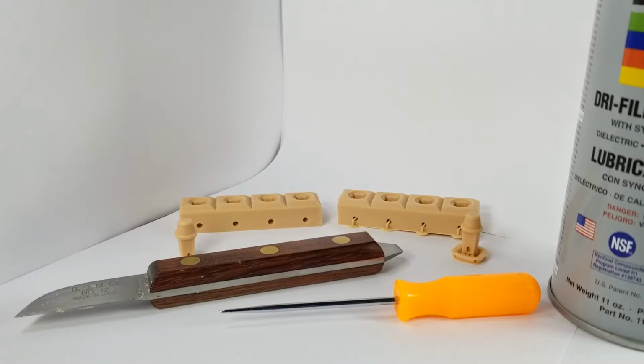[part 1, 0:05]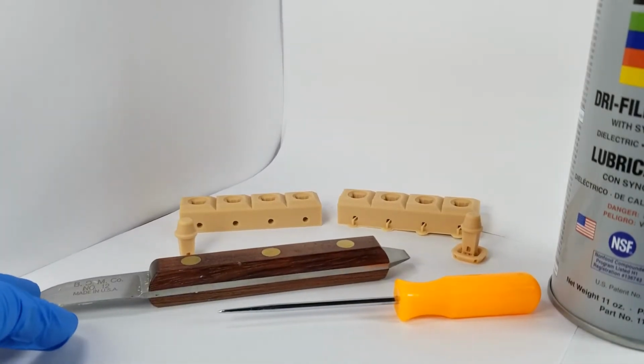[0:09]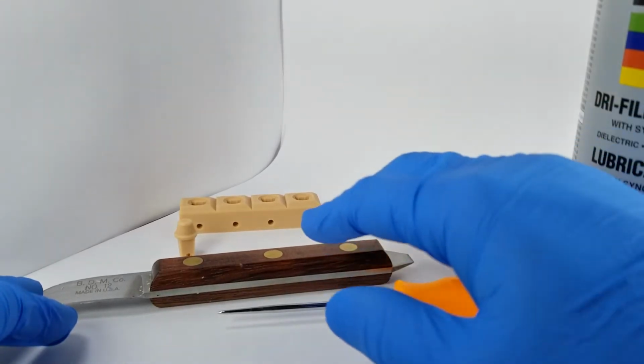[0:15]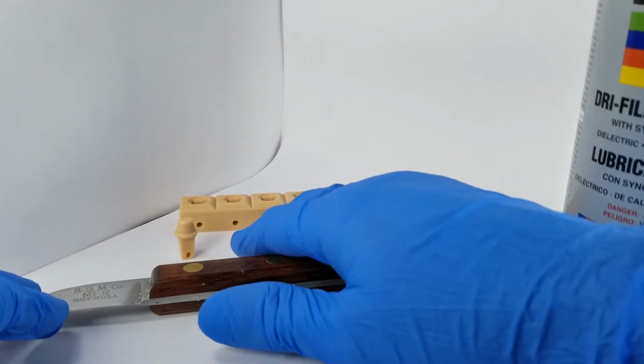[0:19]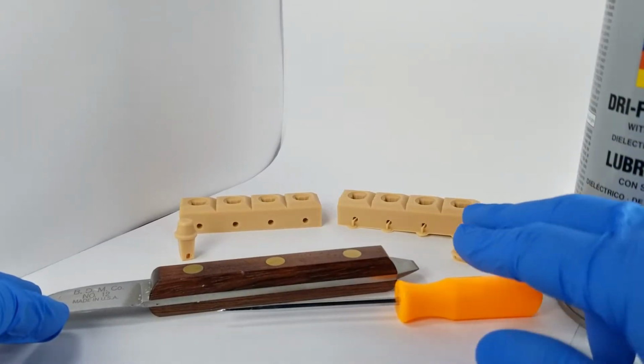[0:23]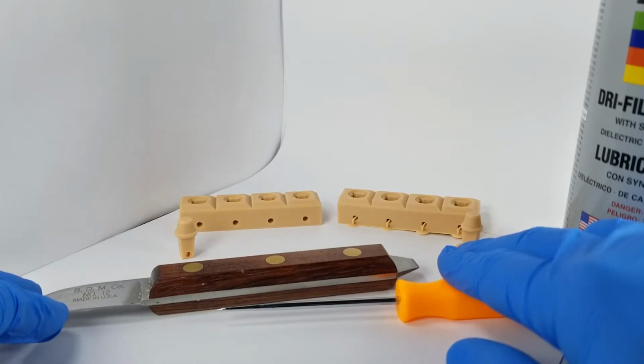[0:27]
Okay, in this video I'm going to show you how to post-process and fit the 3Shape removable die test model. As you can see here, this is a finished test block and die, and then here's one that should be similar to what would come out of the printer, washed and cured and ready to prepare for this test.
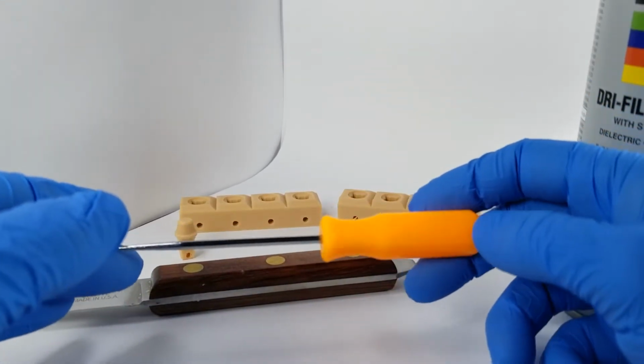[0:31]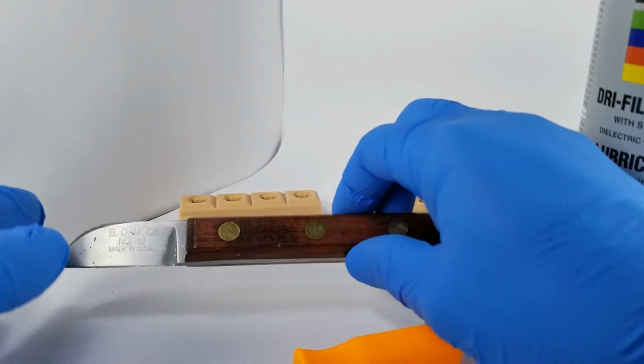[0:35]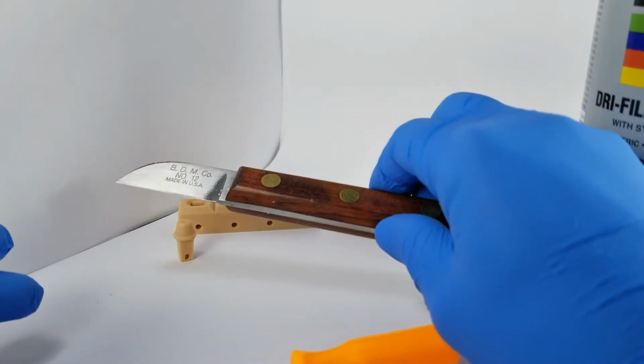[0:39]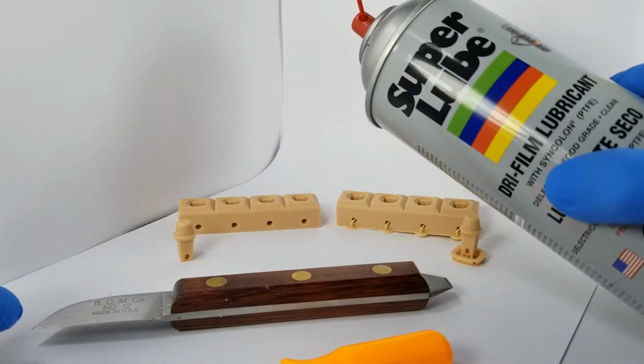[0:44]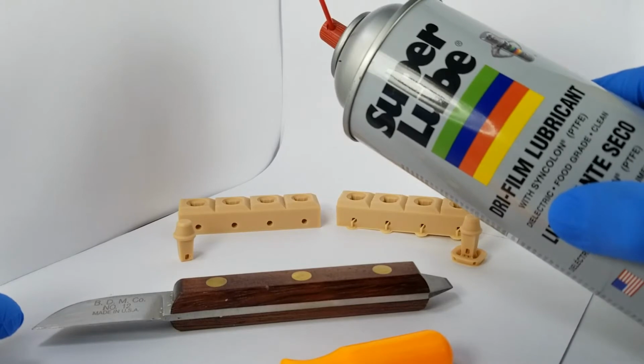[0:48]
In this test I'm going to be using my awl, which is listed on the application guide itself, and my flat edge blade, which I'll be trimming the die with. And then lastly, I'll be using the Super Lube dry lubricant to spray the shaft of the die.
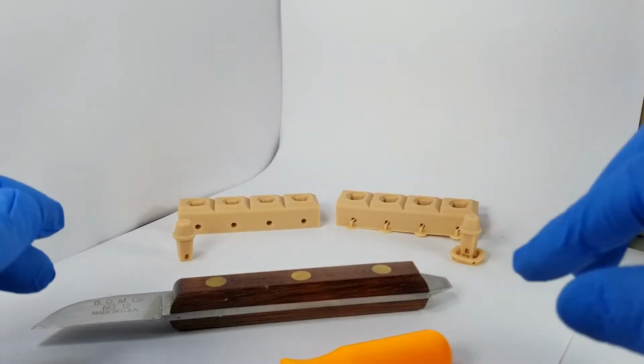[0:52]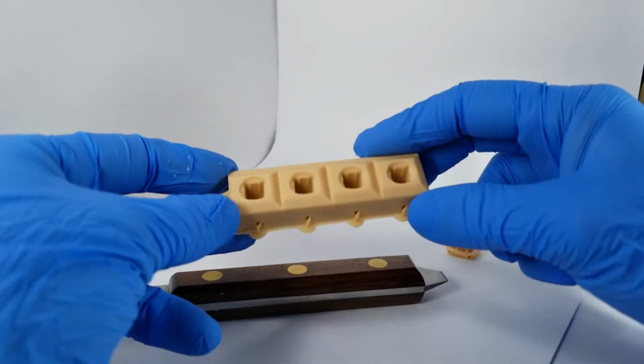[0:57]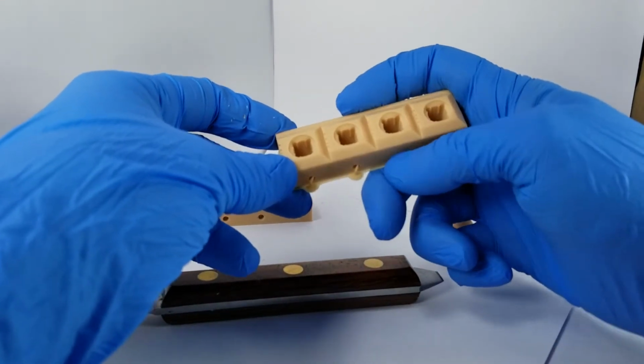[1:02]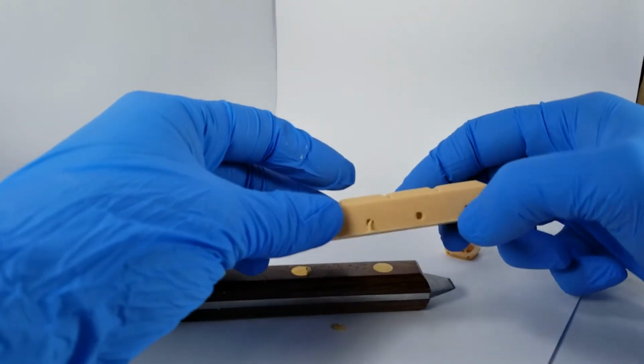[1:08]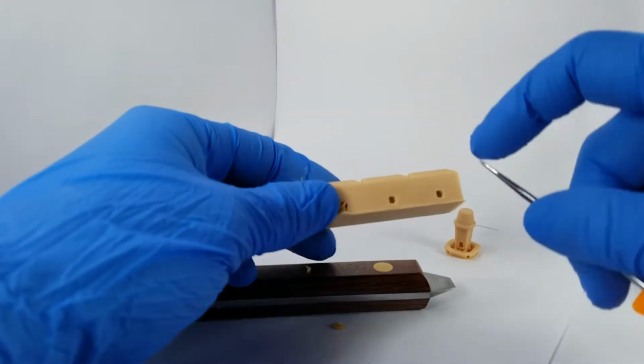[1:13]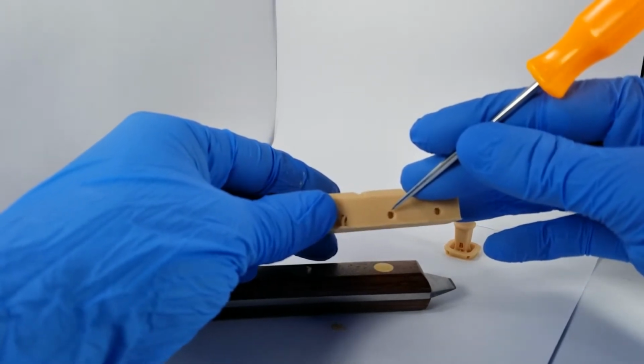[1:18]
So with all that said, first things first, once it's cured, you can easily remove the supports on the front by just using your finger and clicking these off. Now, removing the supports inside the socket is really optional if you want to make sure you have a good view of the insertion of the die to the hole and how those holes align. What I like to do, and usually I do this under my microscope, is push on the edge of the support in the hole and it removes the entire part.
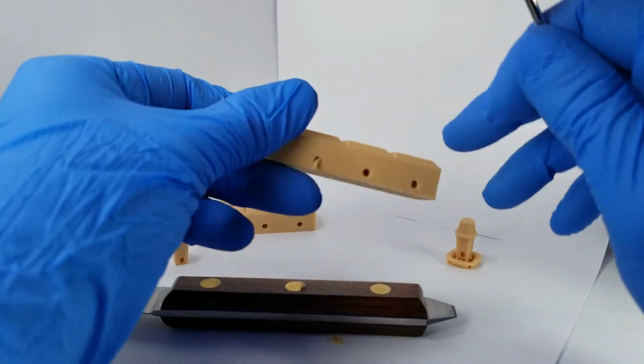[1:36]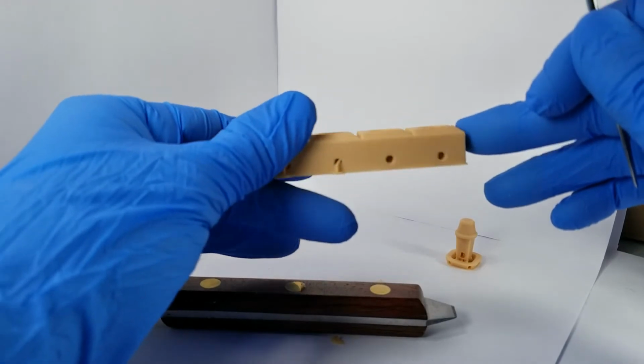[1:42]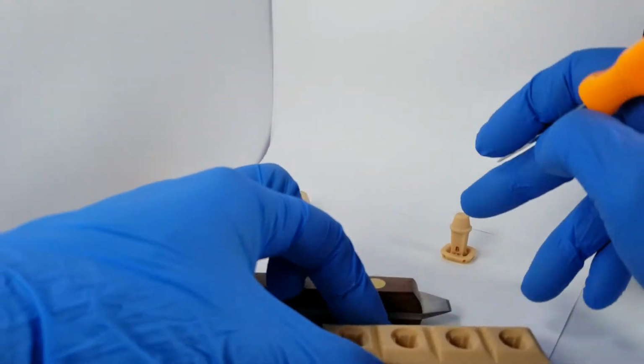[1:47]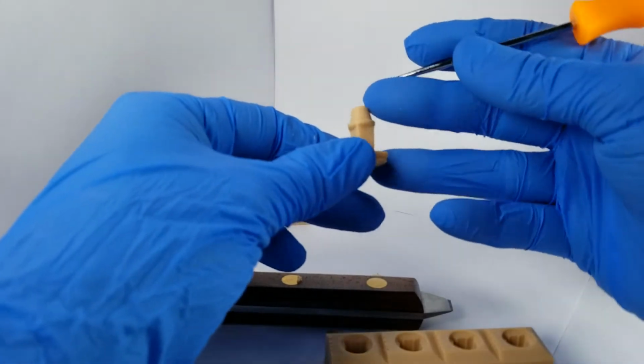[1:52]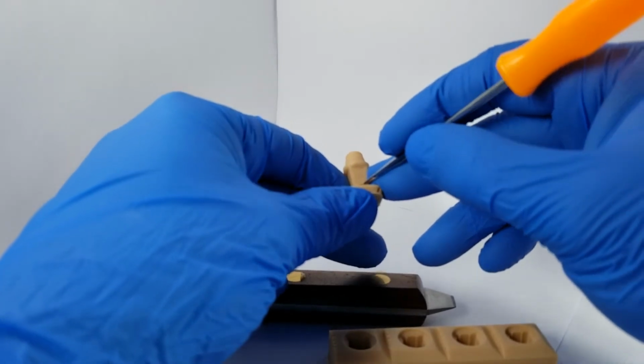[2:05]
So you can remove as much or as little of that as you want to, and just make sure you blow out the hole in the socket with compressed air before fitment, so you don't have that interfering in your fitment. And then for the die itself, similar to the hole on the model, you can use your little awl here and poke out these support structures if you want to see a clear view of that seating hole. So I'll just go in there and push on the edges of those parts. When it's UV cured like this, they usually just snap and blow out, and that looks pretty good.
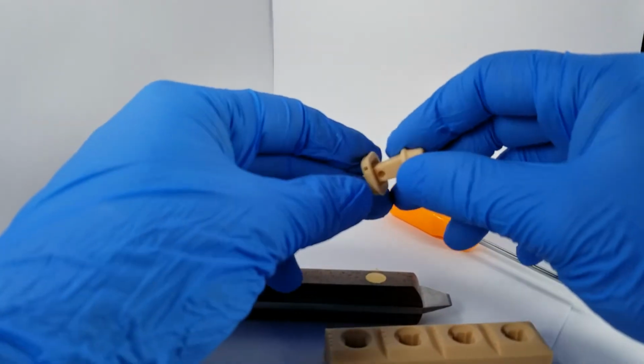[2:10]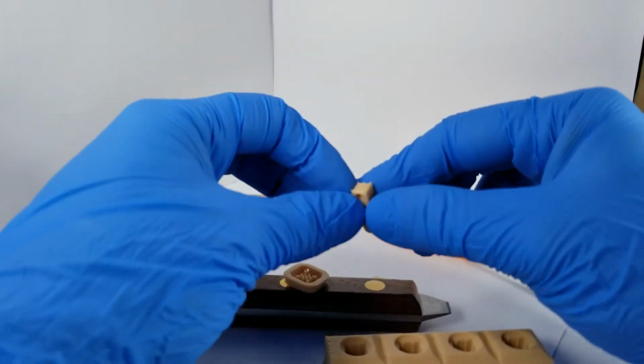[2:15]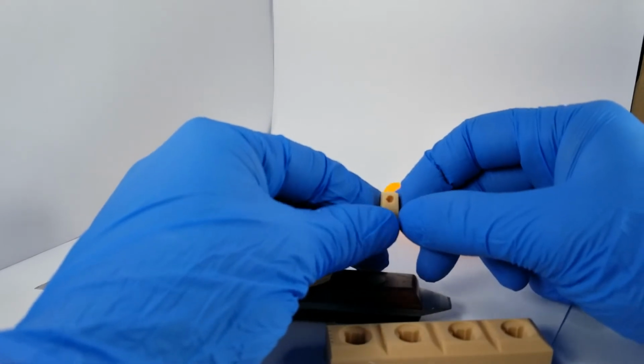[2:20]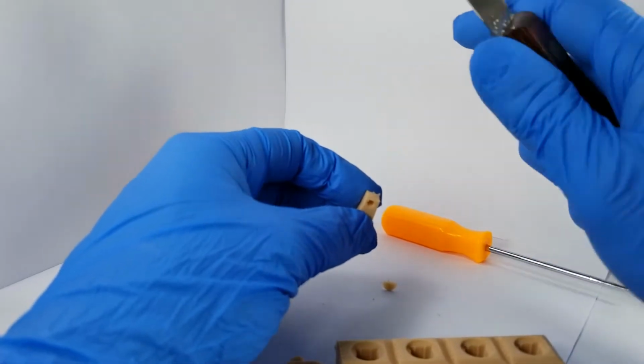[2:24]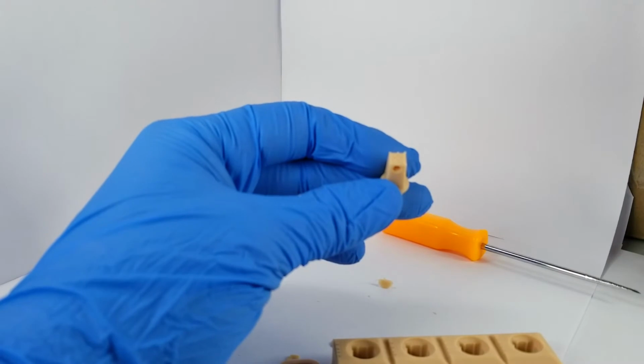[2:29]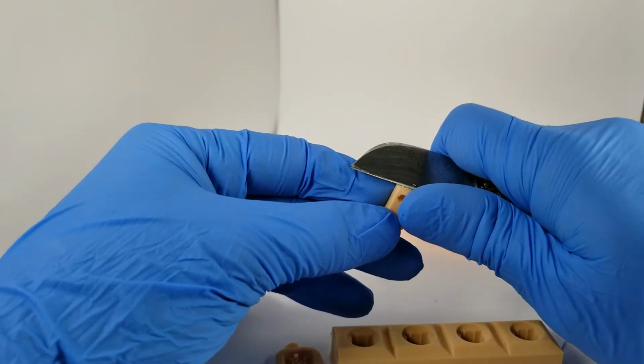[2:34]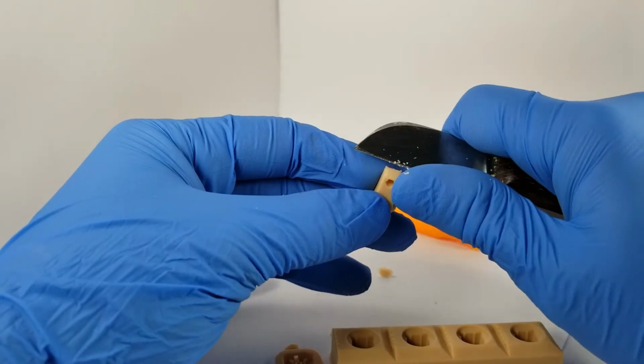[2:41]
The bottom supports are really easy. You just twist and peel it off. And probably one of the most tricky parts, and really what I wanted to show specifically, was trimming this die. Again, I usually use a microscope to trim parts like this, but let me see if I can focus it on my fingers here. Really what you want to do is flushly trim the bottom of this test die, so you get rid of all the little support knobs and have it as flat of a surface as possible.
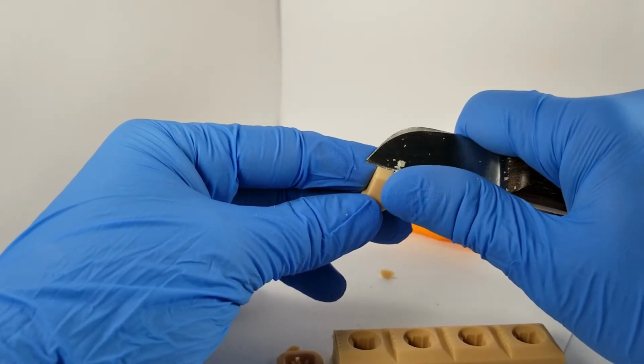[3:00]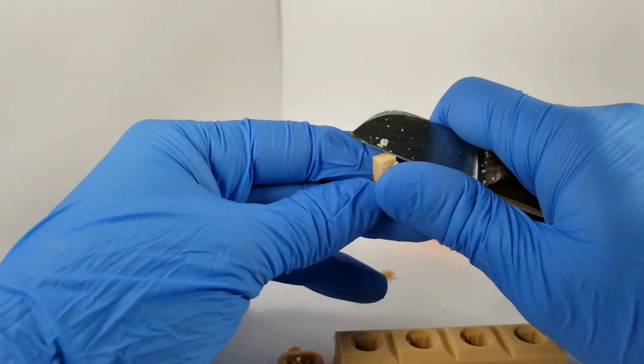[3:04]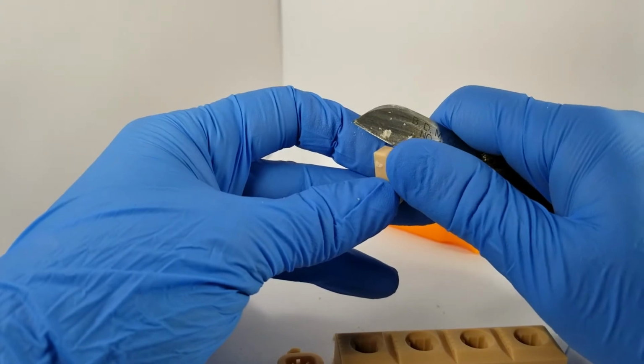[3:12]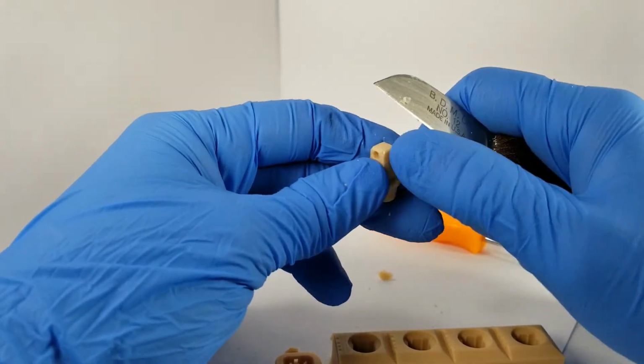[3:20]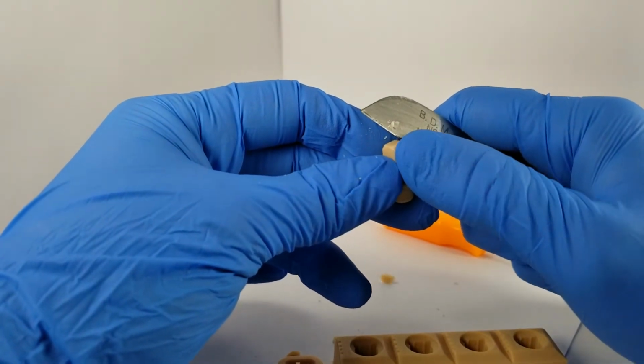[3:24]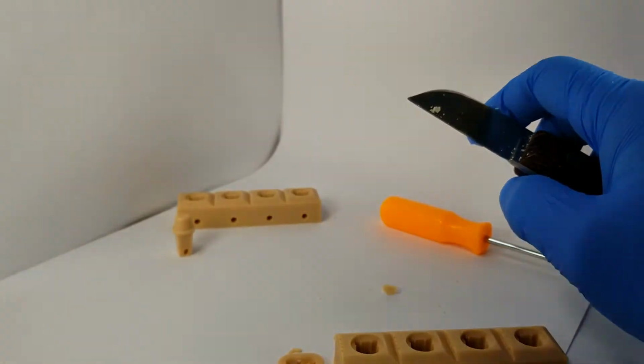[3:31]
Now there's actually quite a bit you can scrape off and remove to make this part flat, and you'll notice during the first step of fitment, you can quickly determine whether it's relieved enough or not. So I'll just do a little bit here and show what that looks like, and make sure you get the corners notched off as well. Something that's important on the edges and the corners is that they don't really have much to do with seating. So over relieving those edges and corners, even removing a little bit extra, will not really change anything. I actually just snap some of the corners off. I don't want those to be the reason why my die isn't seating. So something like that. Again, a little compressed air would be ideal here.
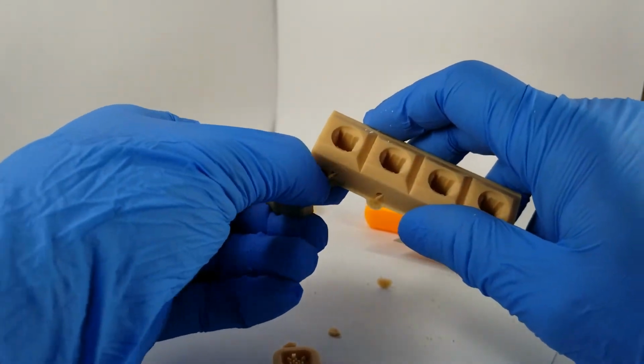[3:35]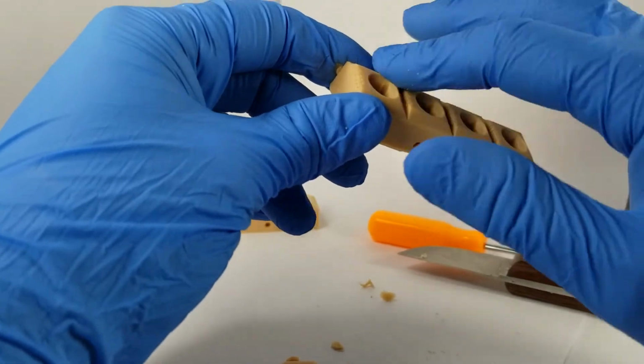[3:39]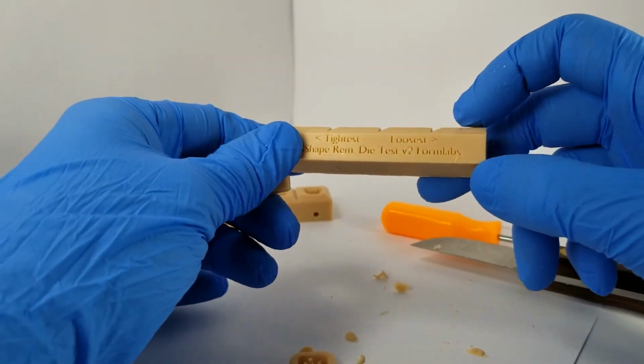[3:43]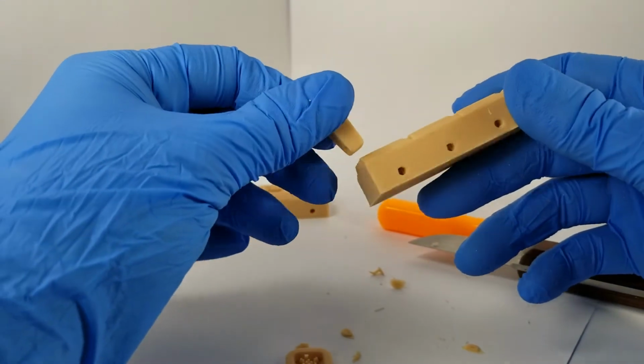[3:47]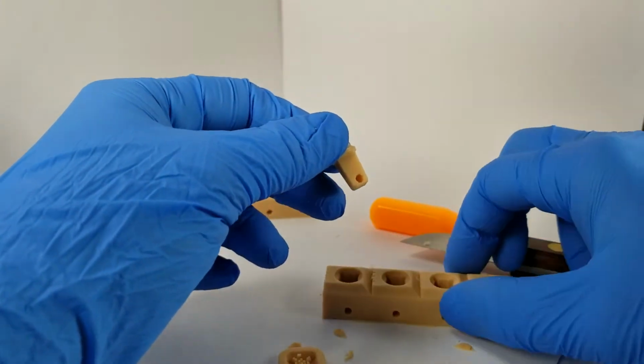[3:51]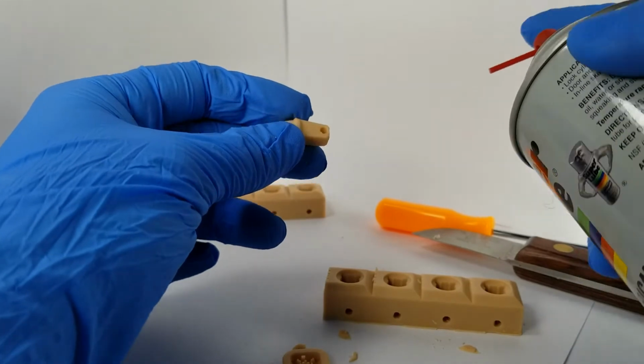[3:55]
We want to work from the loosest side to the tightest in that order. Once you have your model prepped, you insert the die. Actually, I'm skipping a step here. You want to spray this die with our Super Lube. This really makes the part come in and out easily and gives you a better operating range.
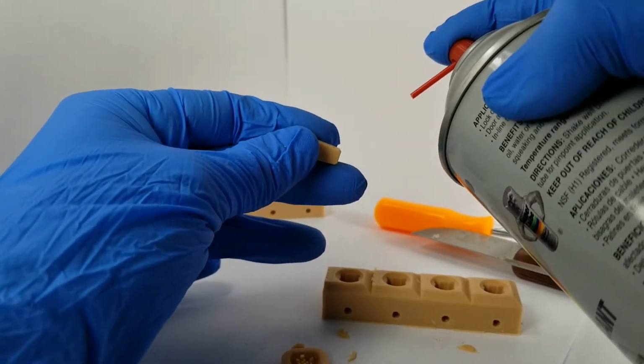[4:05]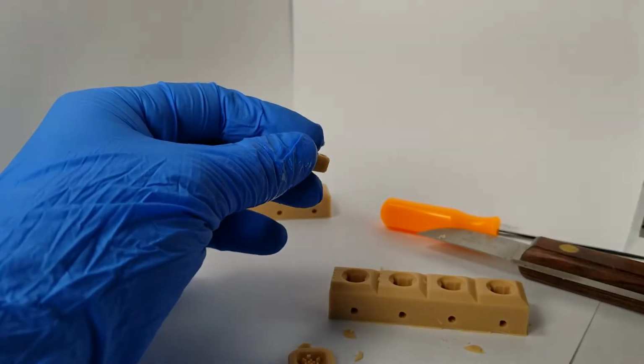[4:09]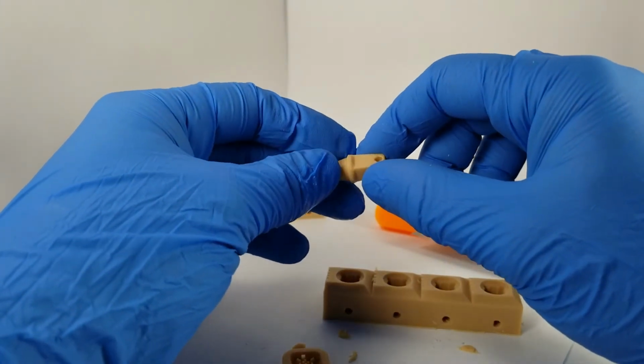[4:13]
And this is how you want to test, because this is what you should be doing for your removable die models anyway. Give it a quick blast around the margin. If you're at all concerned about it getting on the prep surface of the die, you can mask it with tape or something like that as well. But this spray-on dry lube is food grade, it goes on clear, and there's really nothing left behind, so I wouldn't be too worried about it. Let that dry for a minute.
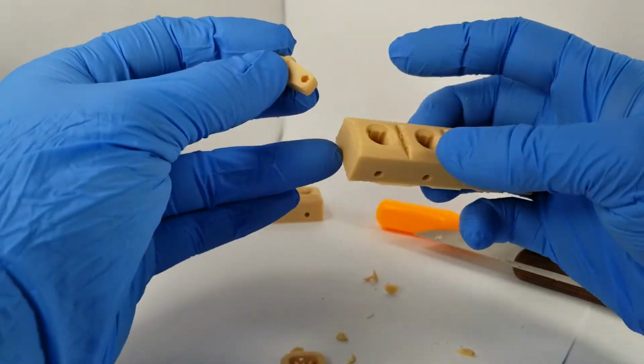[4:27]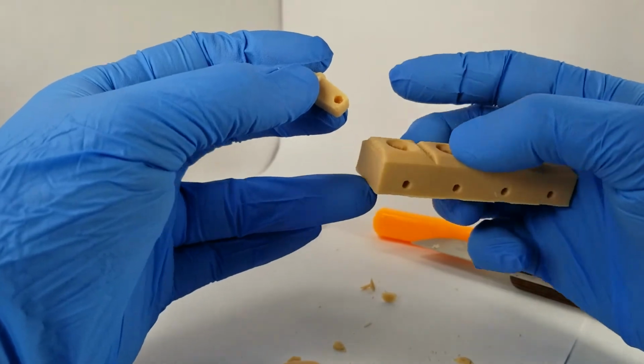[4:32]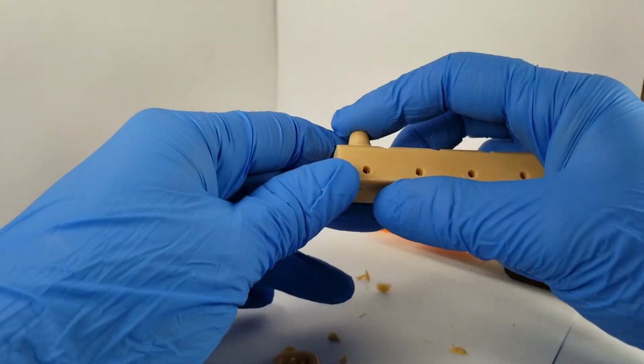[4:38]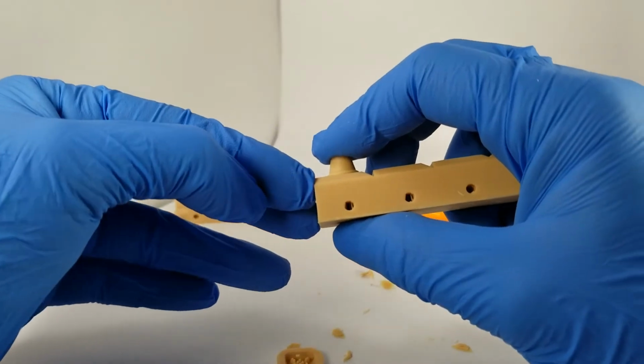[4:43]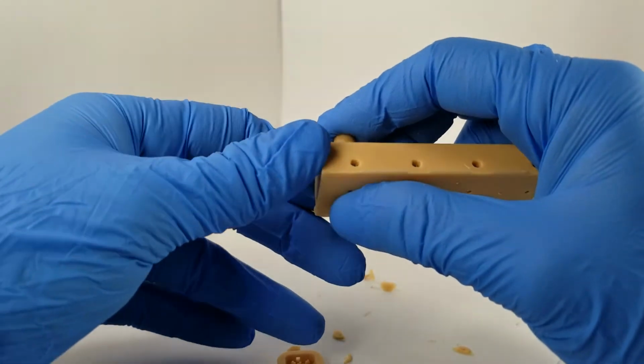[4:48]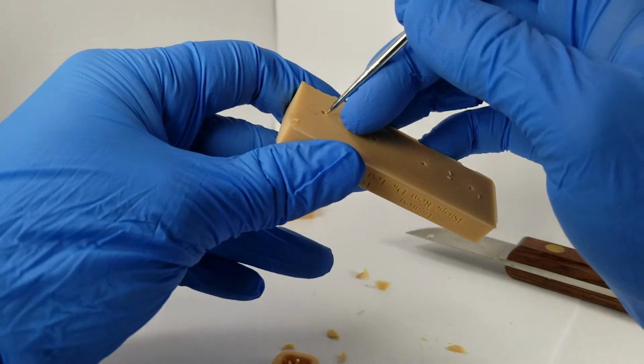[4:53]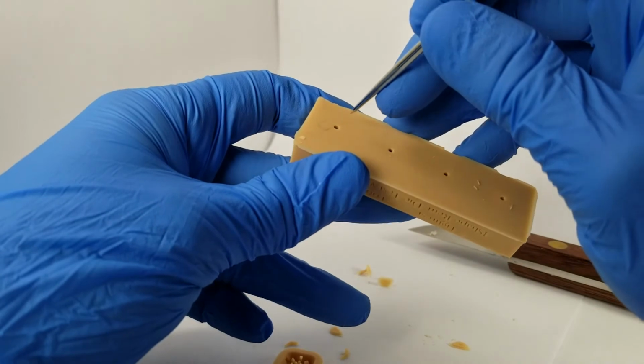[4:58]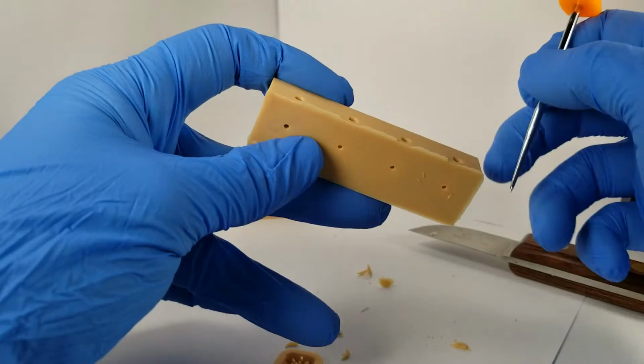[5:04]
Now we are ready to do some seating, and again I'm starting on the loosest side first, the 0.035, and we are seating it. You want to make sure the seating hole is all the way down, and it's hard to see on a camera that doesn't have a microscope. If it's not, you view the seating from the bottom hole, and don't be afraid to relieve this bottom hole a little bit more. I use my awl, which is nice because it's a bit larger than the hole, so the deeper you go in, it expands out that hole very nicely.
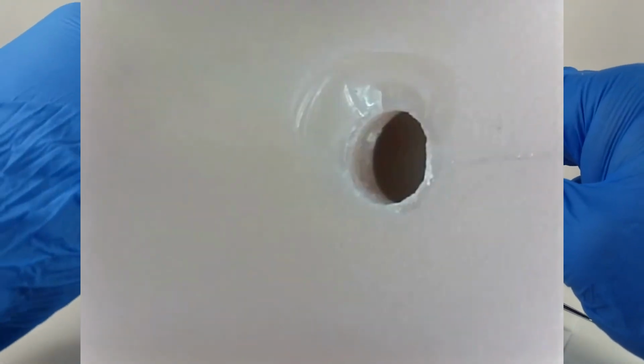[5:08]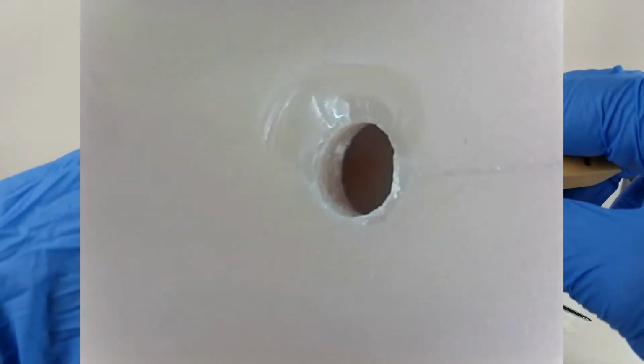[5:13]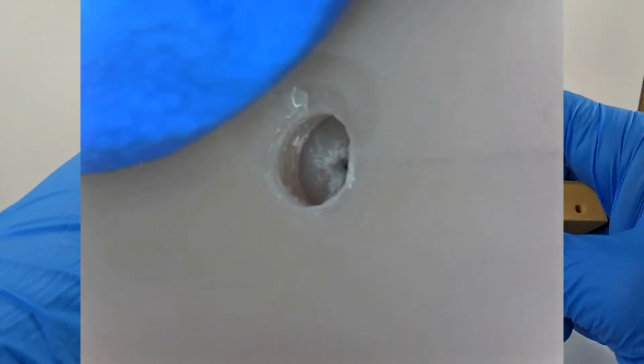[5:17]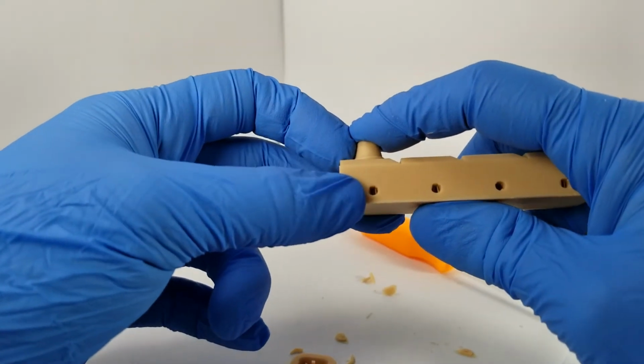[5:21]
Inspect the sockets, make sure there's nothing in there, and you can view from the seating hole whether it's down flush. And if the bottom of the die is flush to this hole, and you are not getting alignment on the pinhole on the side of the model, that means you need to relieve the bottom of the die slightly more.
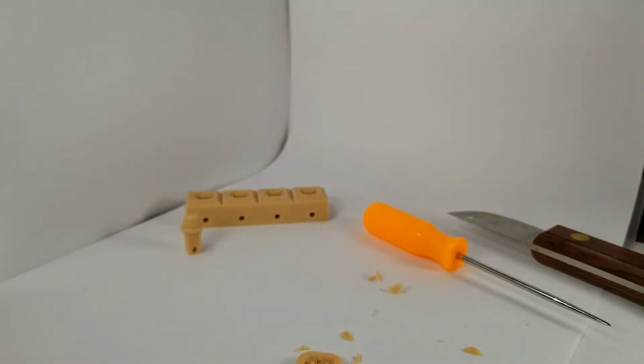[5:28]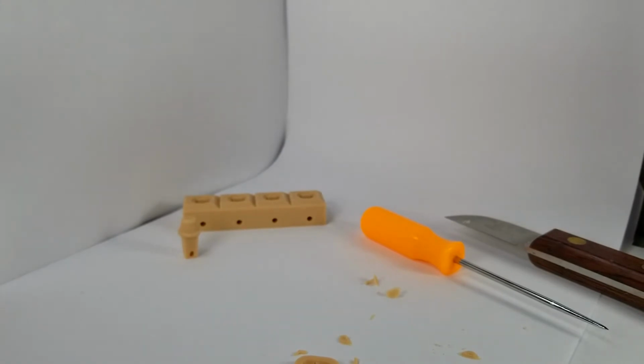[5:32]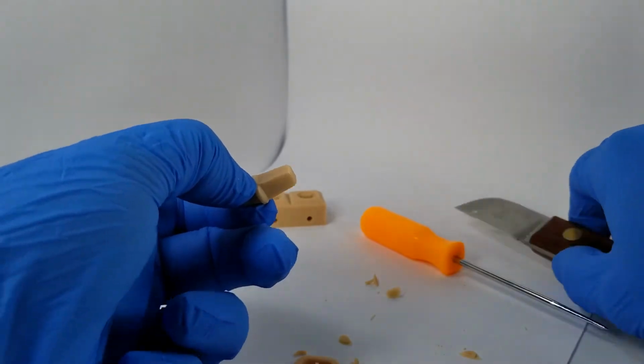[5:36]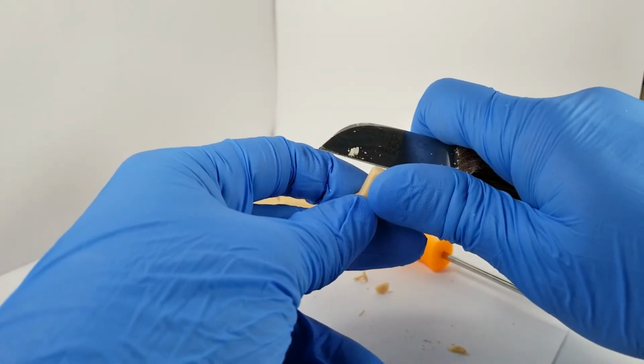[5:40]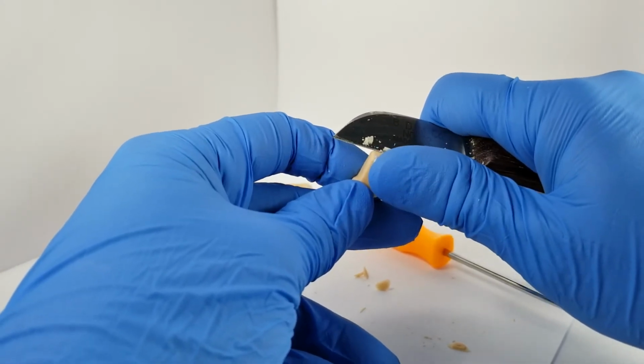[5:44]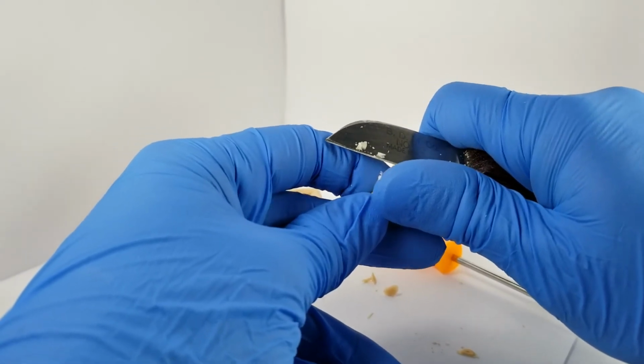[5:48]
I'm actually going to go under the microscope because I can't really see and record at the same time, but it is a little bit raised. It looks a hair raised, and it is going flush to the bottom of the model. So I will just trim a little bit more off the bottom of this die and try to make it as flush as possible with my sharp straight blade here.
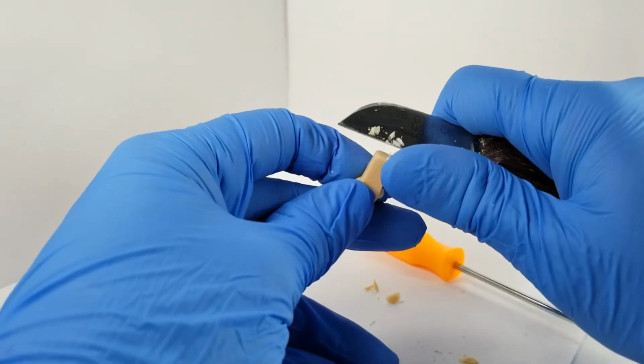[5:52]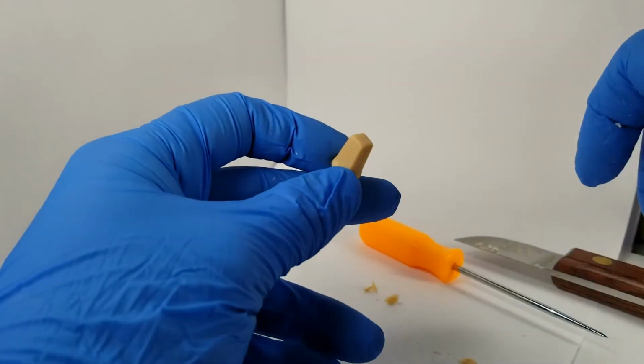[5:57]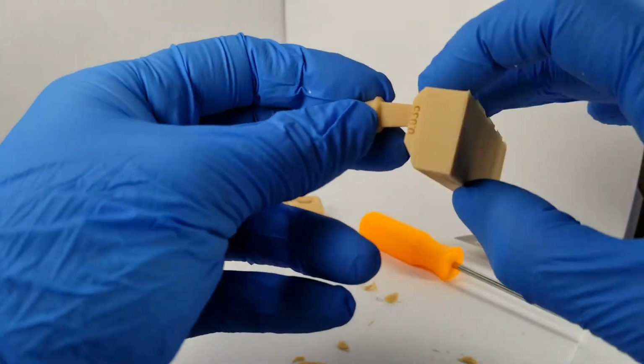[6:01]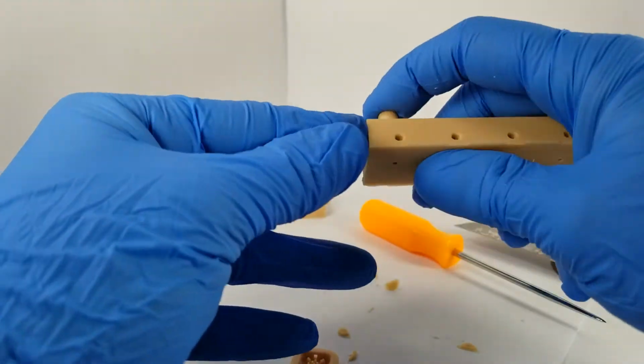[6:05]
Just like this. Okay, just a little bit at a time. Again, go back to the loosest, like this. Check your seating on the bottom, check the seating on the side, make sure it's all the way down. Again, I'm going to look under a microscope because I can't really see.
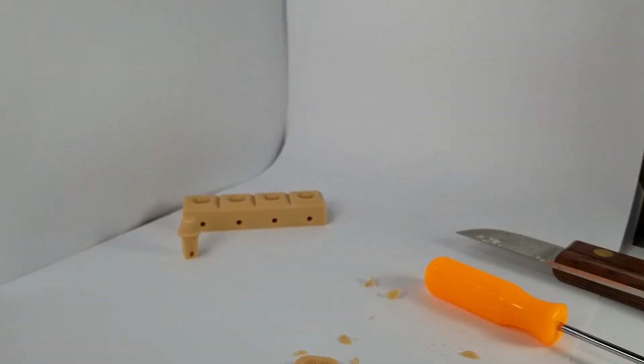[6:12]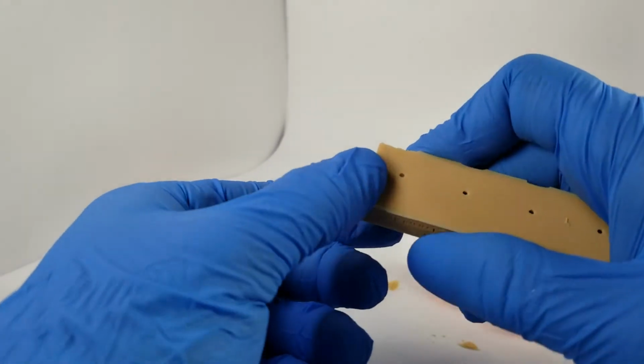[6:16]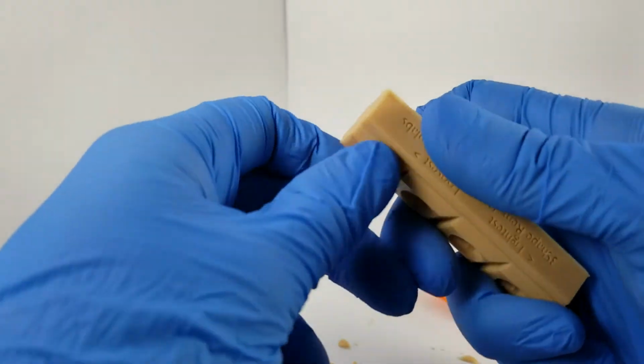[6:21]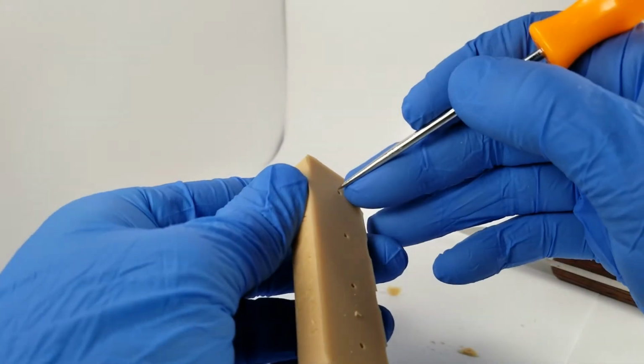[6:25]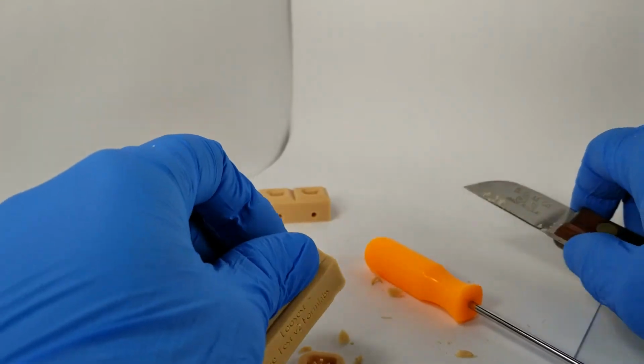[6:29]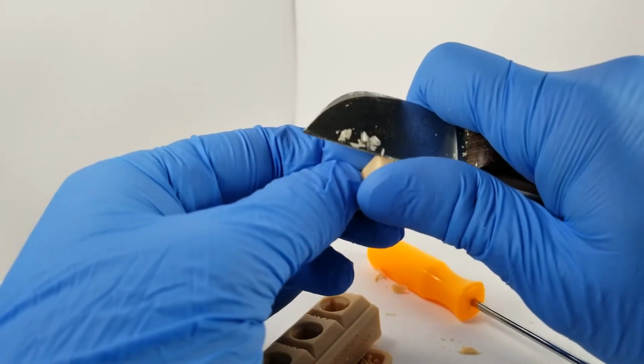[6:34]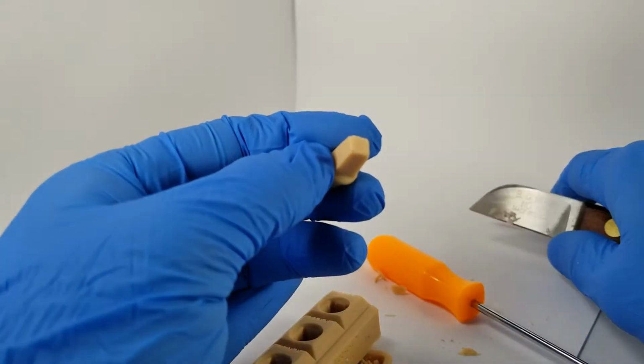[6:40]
Oh, it's super, super close to being aligned now. It's totally flush to the hole. Just a hair more of a relief and we'll be good to move forward on the test. So I can't get the die out with my fingers. So the awl again, just push lightly from the bottom and that pops right out. And so I'm just going to relieve just a hair more of the bottom surface again, trying to make this as flat as possible. And I'm just removing a very small amount of material there.
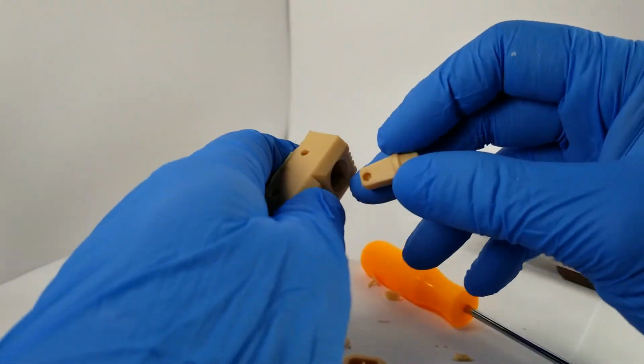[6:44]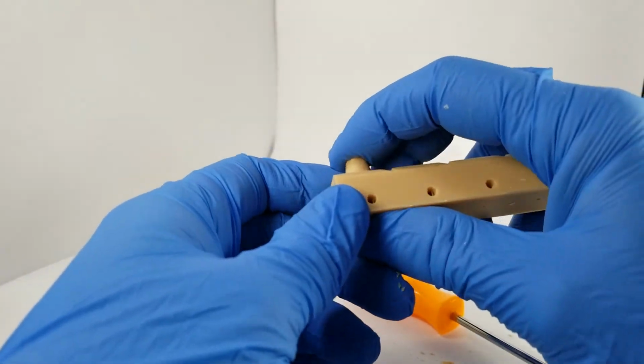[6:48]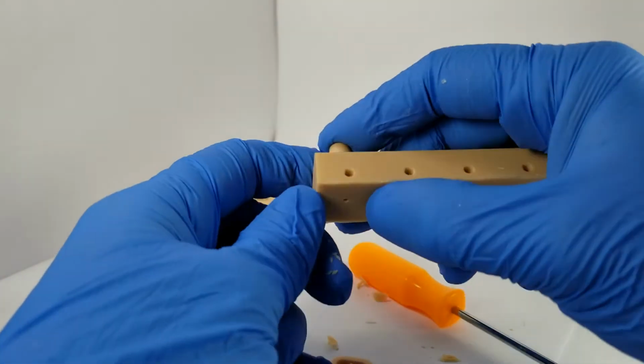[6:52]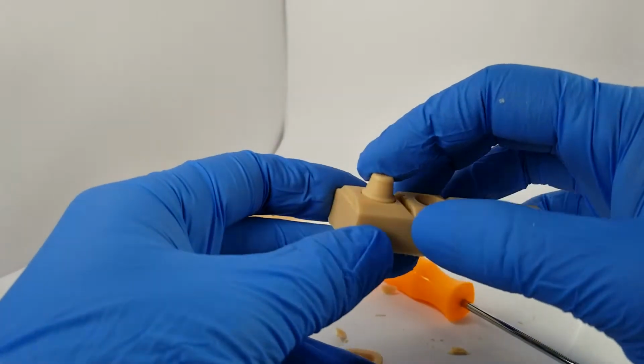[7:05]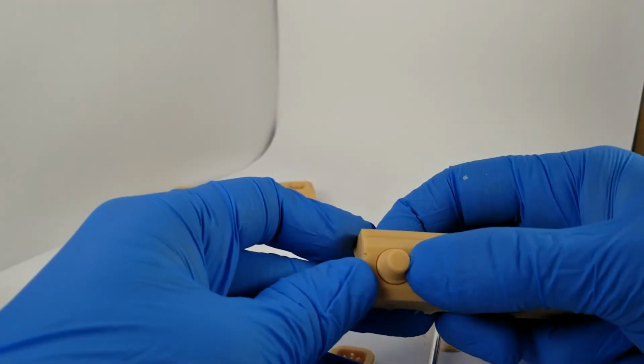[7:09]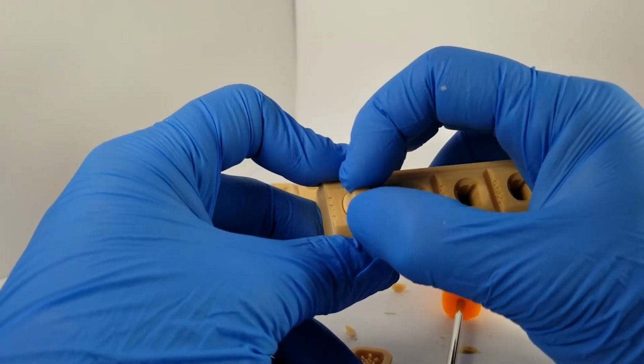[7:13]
And this should be good at this point. I will just confirm under the microscope, but from here, that seat looks really good and that looks really good. Let me just confirm. Oh, it's just about perfect. So on the loosest hole, we have just about perfect seatment on the top and the bottom. And really what we're doing now is wiggling the die and seeing if it moves at all.
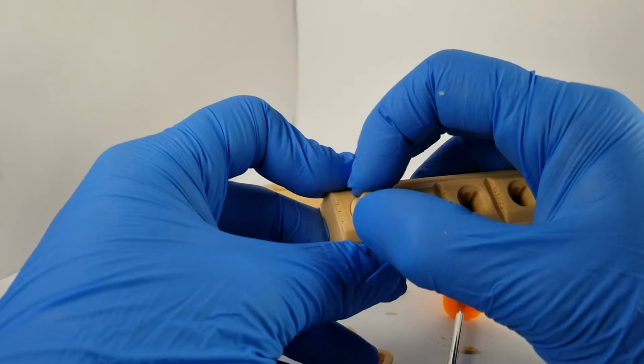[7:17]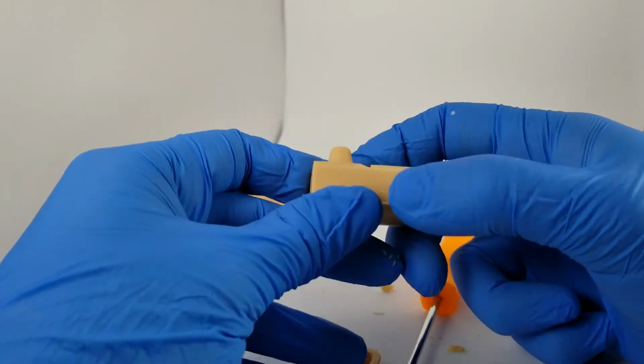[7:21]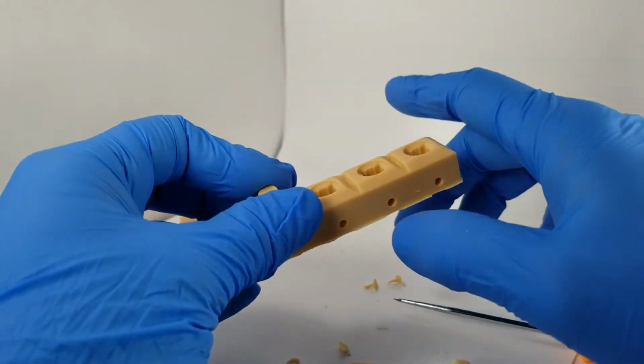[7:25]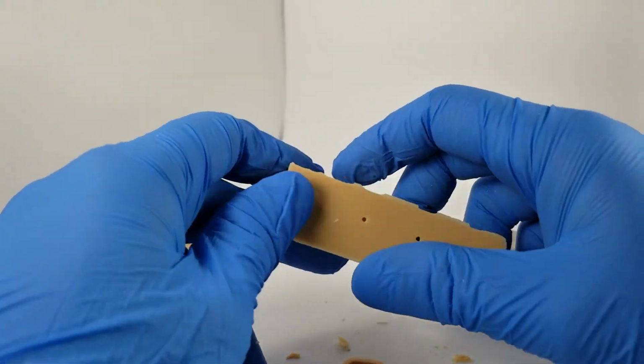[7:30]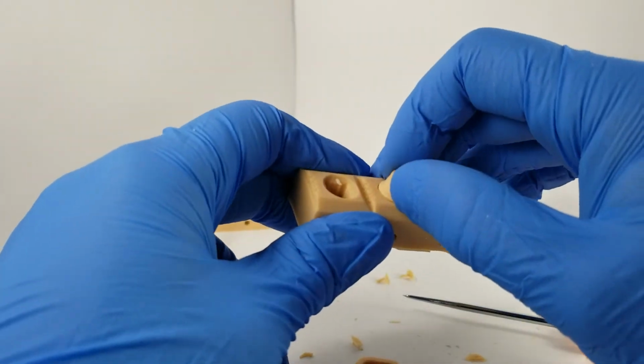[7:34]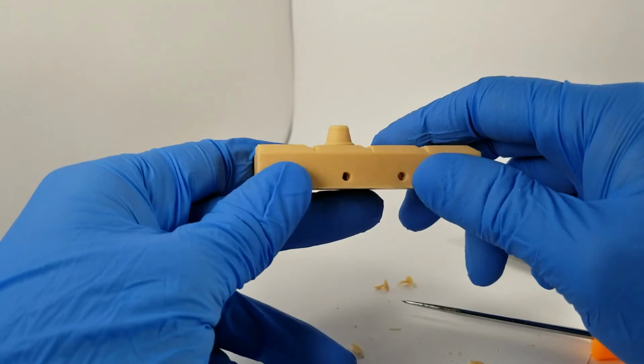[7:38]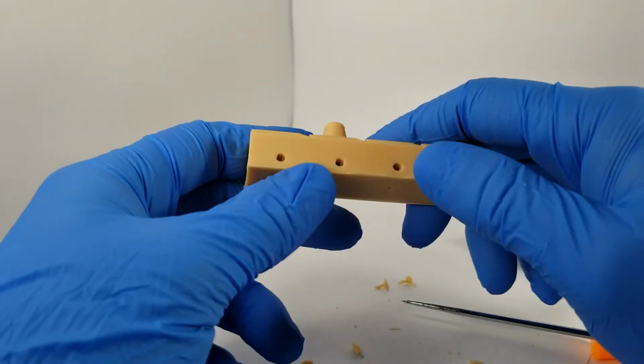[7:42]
And to be honest, this die is not really moving that much. It actually is seating very, very well in this model. This setting, the loosest setting here, actually looks really pretty good. But the theory here is we want to go as tight as possible so you can have things just generally fit better and tighter. You want tightness. You do not want looseness. Looseness will change your contacts and occlusion and several other things about prep, fitting, and seatment.
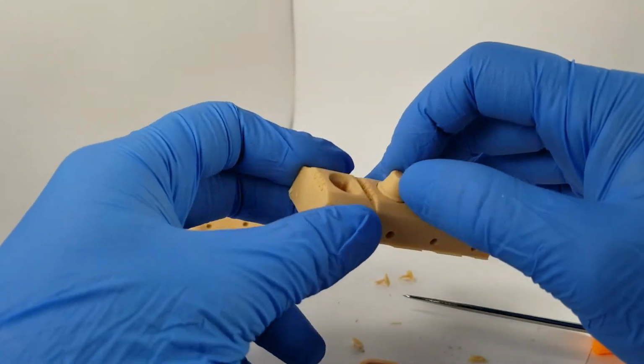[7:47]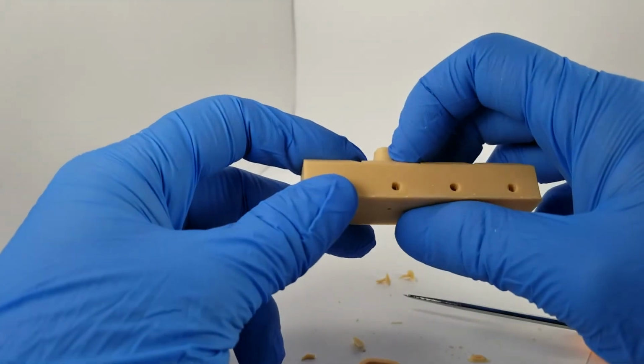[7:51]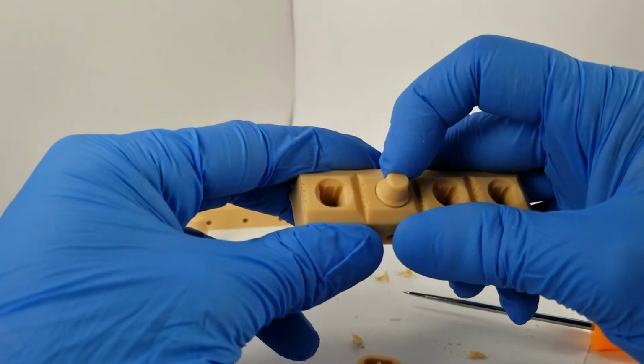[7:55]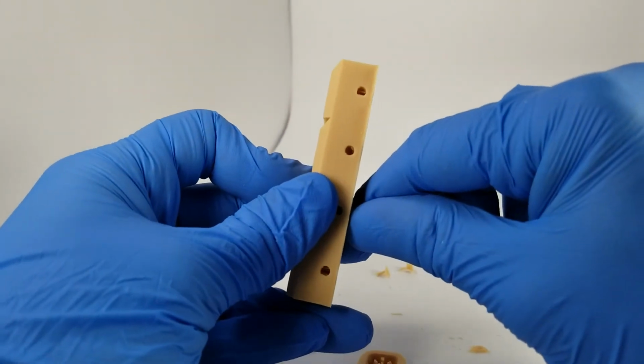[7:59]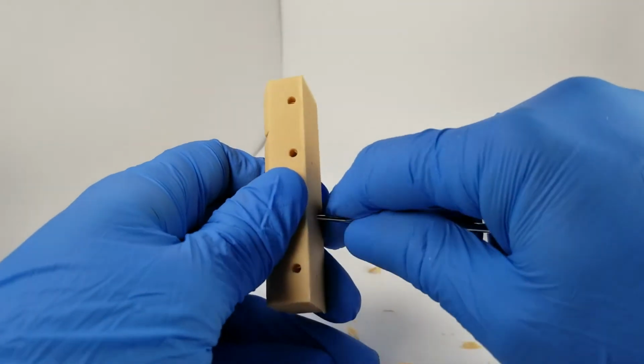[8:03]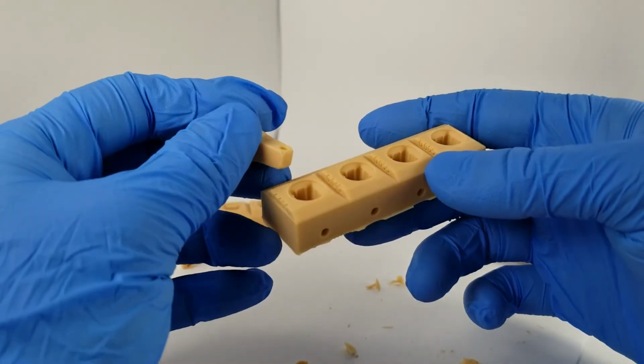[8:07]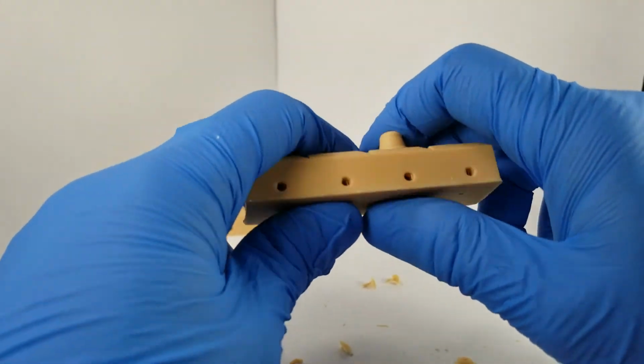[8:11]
But even at this point, 0.045 here is seating. It's aligning. That looks really good too. It is not moving. And really what you want to do is move it up to the tightest until you can't pop it out. So that is actually really in there. That actually might be the setting that I would be happy with at this point. But I'm going to try one more tighter round.
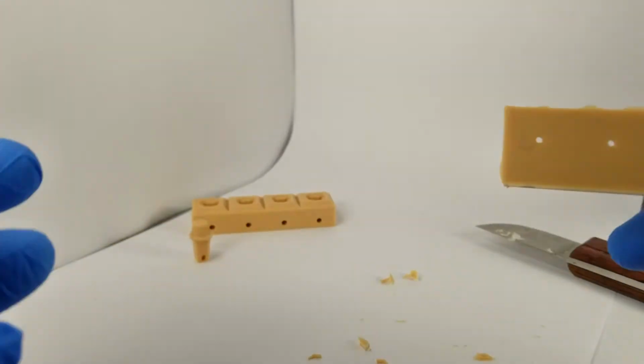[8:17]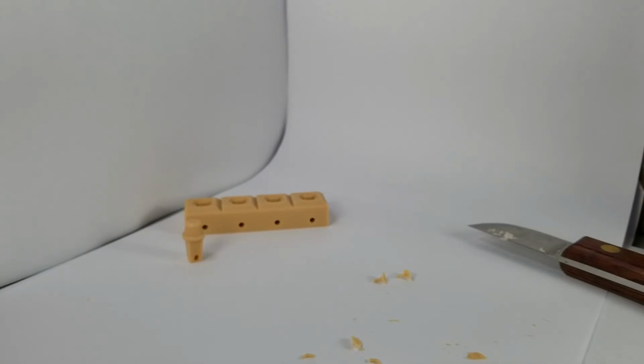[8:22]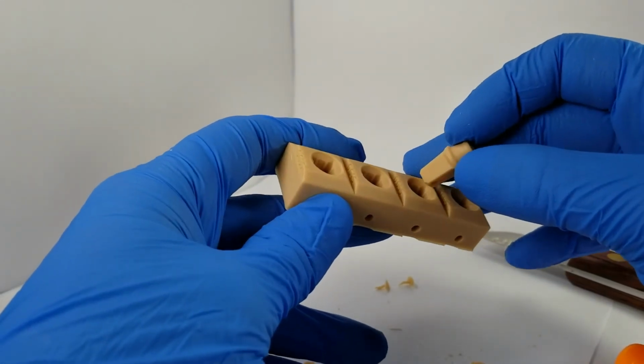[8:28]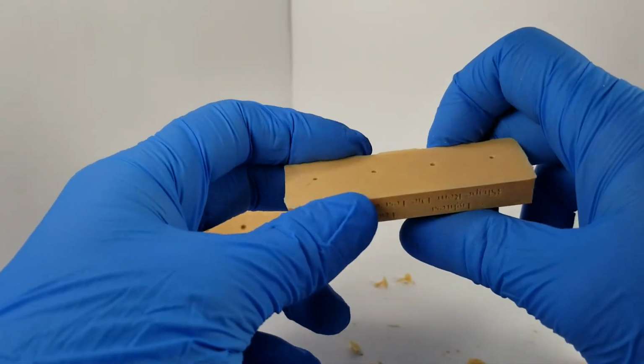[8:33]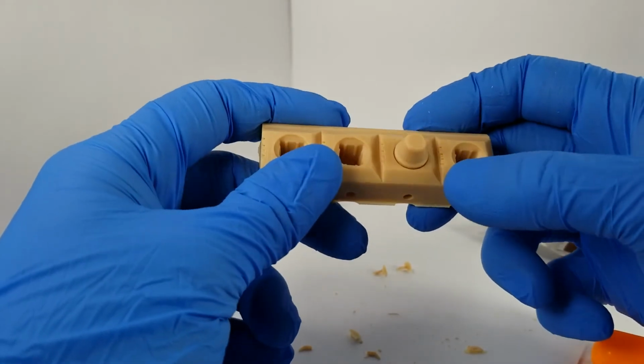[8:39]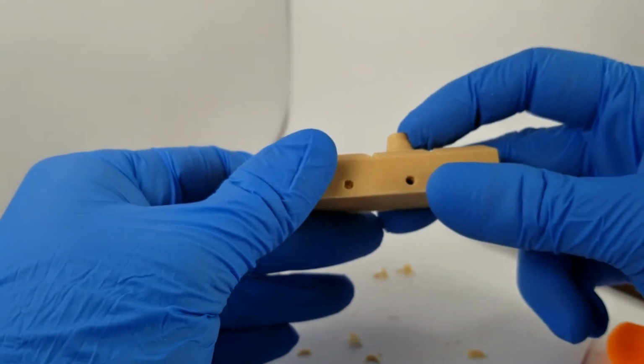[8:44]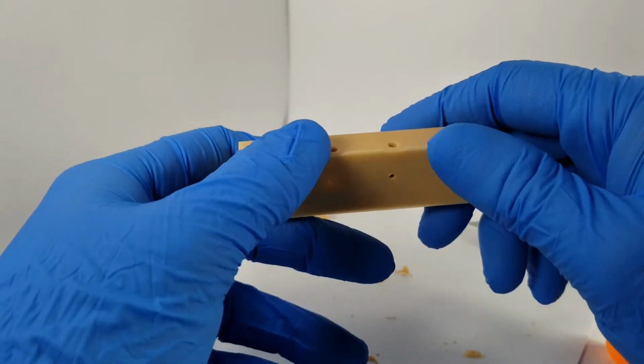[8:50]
Let's just see if this goes down all the way. And let me just check under the microscope. So this is 0.055. So now I'm seating 0.055, or the second to tightest setting here, and I'm pushing the die down, and you just want to again confirm that it is flush with the bottom pinhole there, and it is seating completely on the vertical hole, and then you want to push it with your finger, wiggle it. This thing is not going anywhere.
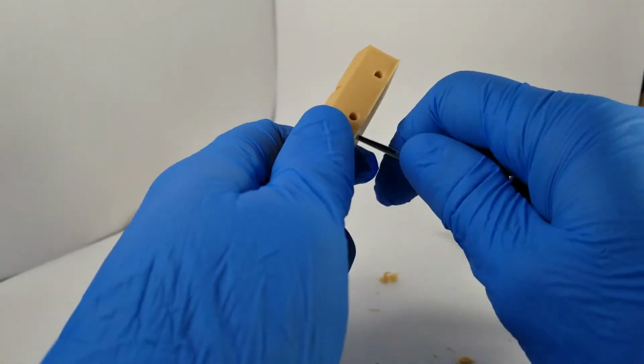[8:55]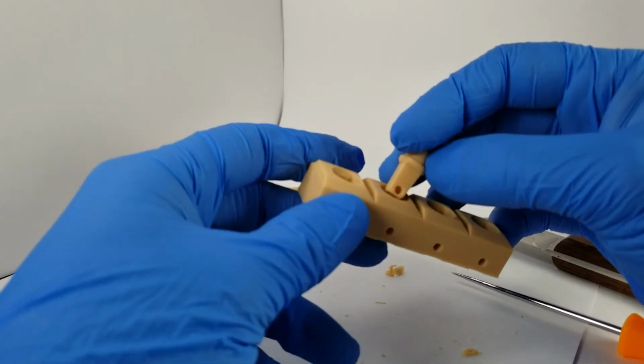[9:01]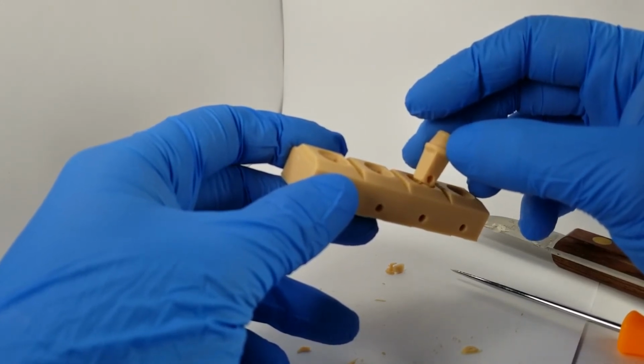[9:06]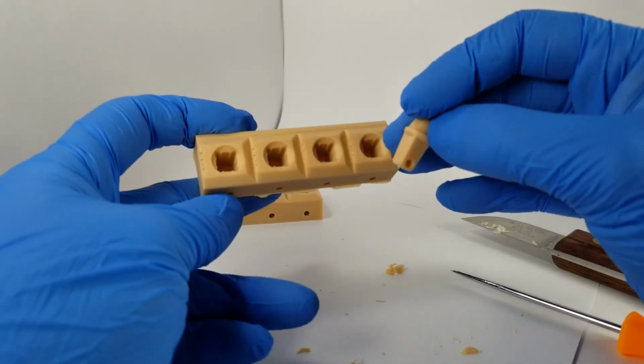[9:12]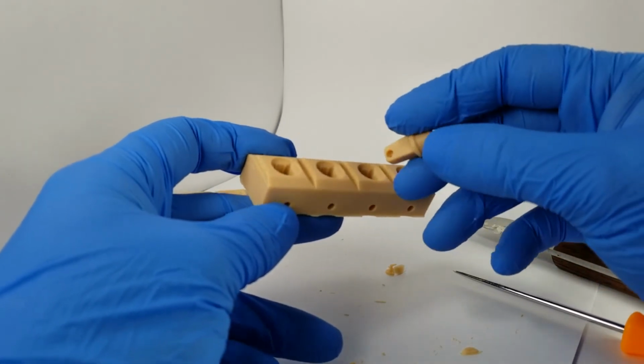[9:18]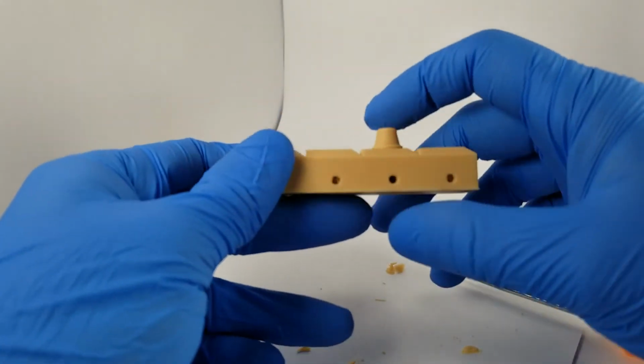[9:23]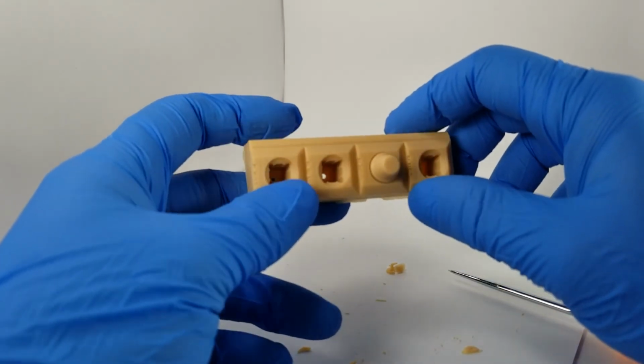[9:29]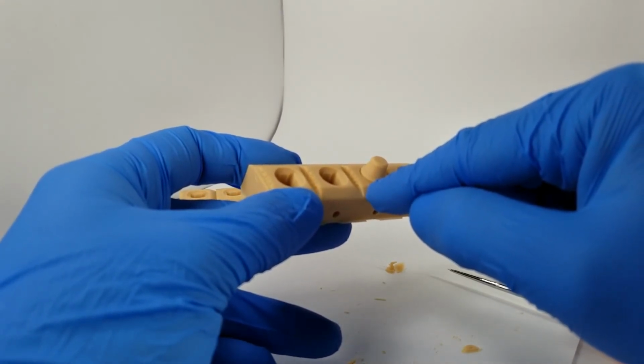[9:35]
I think after this fitment, I really like the 0.045 and a little bit of the 0.055. I would probably go with the tighter of the two because I could do another round of dry lubricant. And again, it's whatever you're personally happy with, but work up the chain, seat it all the way, confirm seating, wiggle the die, and based on what number you like most, that is what setting in 3Shape you could use.
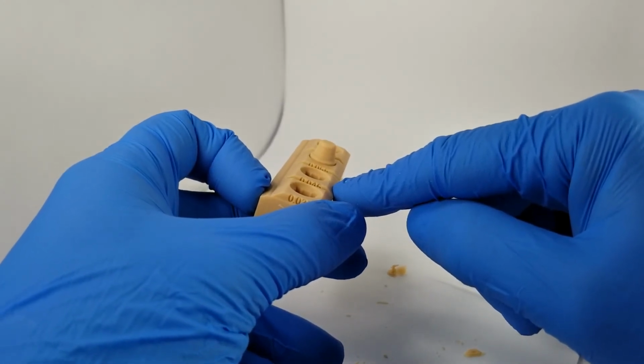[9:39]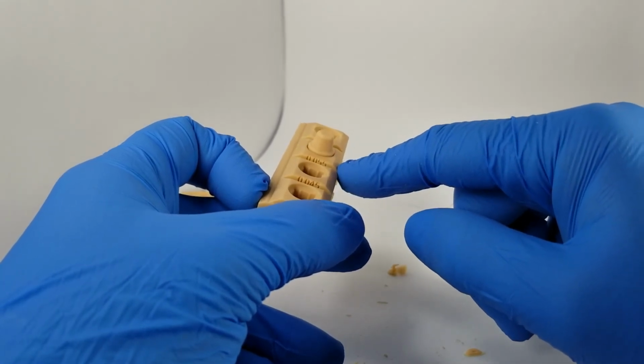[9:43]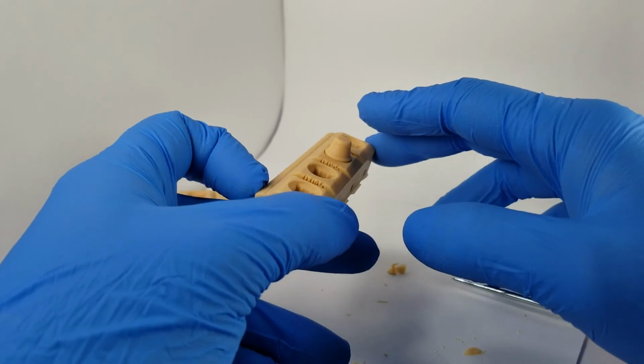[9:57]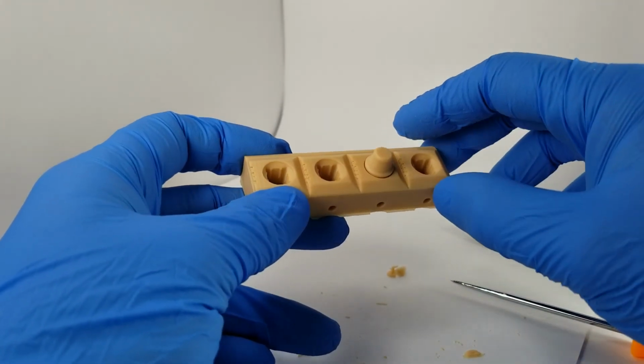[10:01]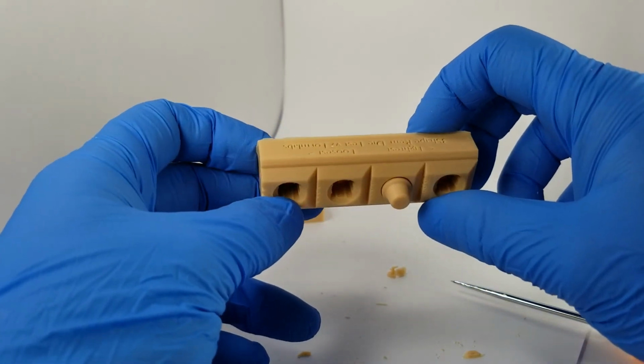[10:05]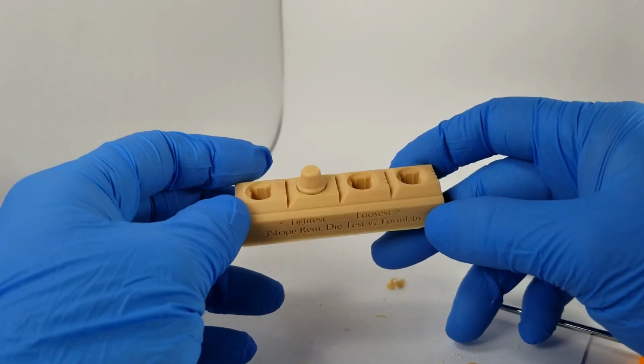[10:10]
So that's how to do die testing and tuning on the Form 3B for 3Shape. Thank you.
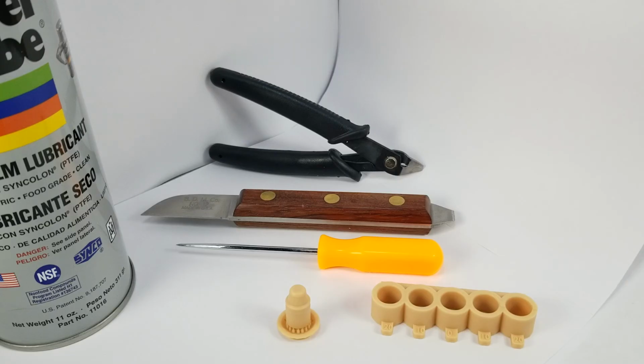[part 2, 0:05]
Hello, in this video I'm going to show you how to use the ExoCAD test and die offset check model and how to finish it, and then use that model to determine which setting is best when setting up orders and building models in ExoCAD.
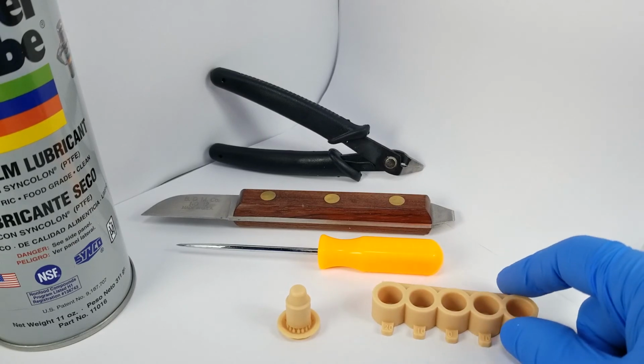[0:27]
So here we have some tools and we have the block. This block should be printed and post-processed, so washed and cured like normal per the instructions, and I'll be linking the instructions in the bottom of this video as well if you need to refer back to it or if you don't have it handy. You should have the socket or the model and then the die to fit to it. And after washing and curing, it should look something like this.
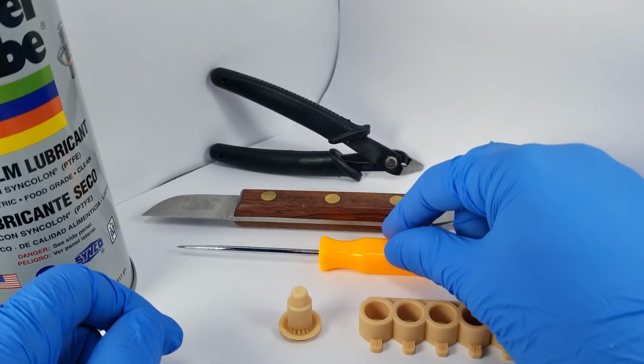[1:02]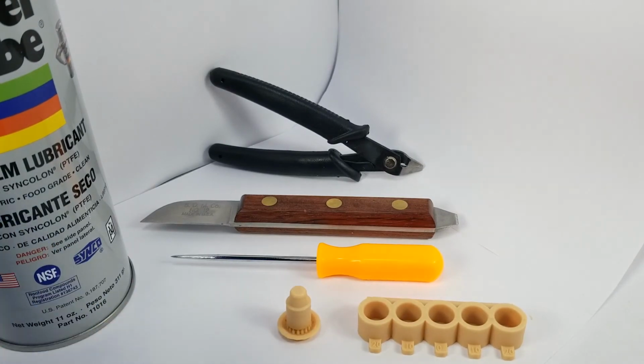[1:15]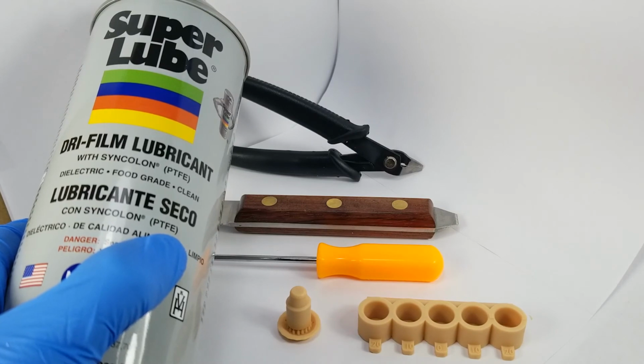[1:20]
The dies on supports, and some of the tools that I'll be using in this video, and these are also linked and shown in the applications guide, are my awl, and my knife, a straight blade sharp knife, and then the snips or the cutters that come with the finishing kit. And then lastly, this is my spray dry lubricant called Super Lube, which will help make the seating of the die much smoother and much more repeatable and make it easy to get out and in.
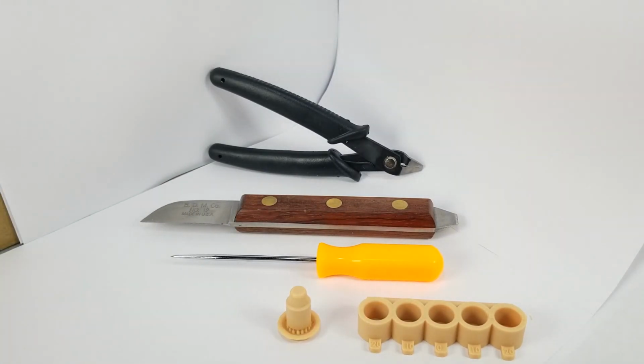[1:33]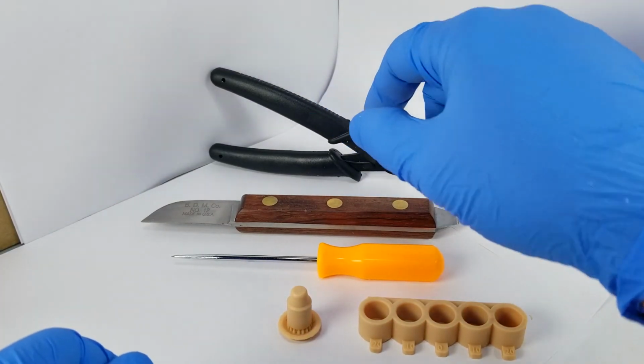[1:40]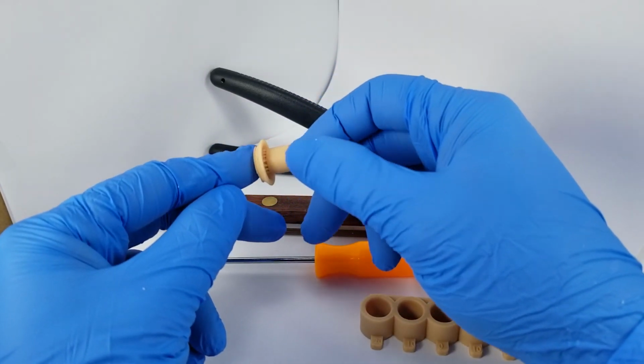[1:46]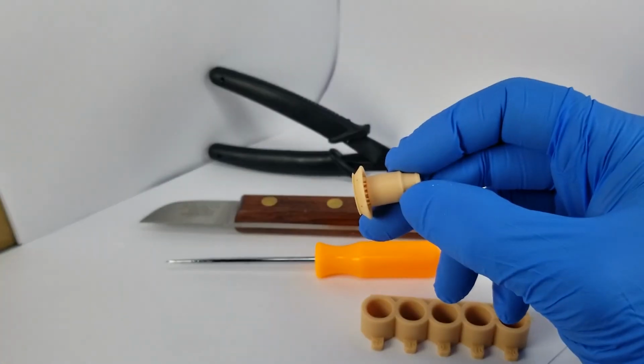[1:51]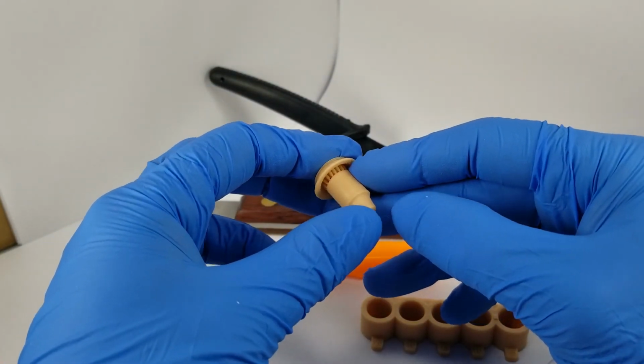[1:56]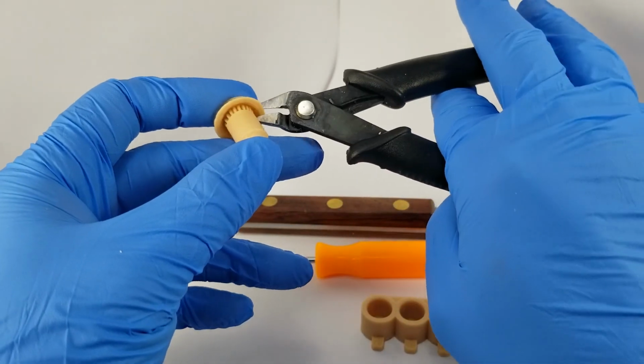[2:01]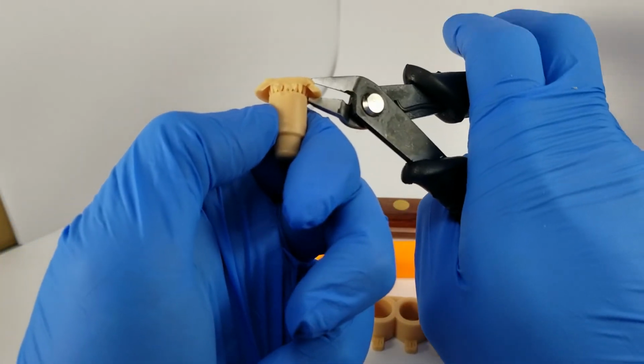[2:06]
All right, with that said, first thing we need to do is get the die prepared. To do that, really all you need to do is remove these supports and then cut the support points that are left over with our knife here. You can try to just rip it off, and that generally will work. But another technique, and why I have these snips here, is you can also just cut the base of the raft. And generally, this will give you better access to removing those supports.
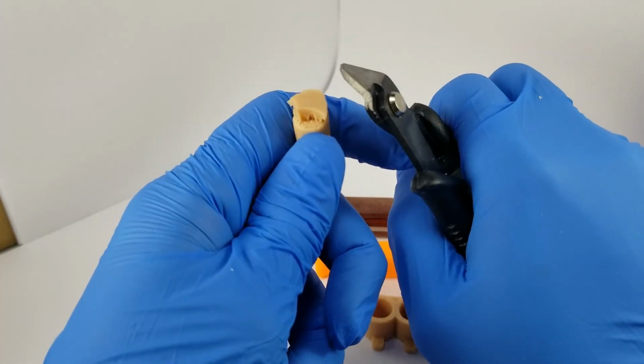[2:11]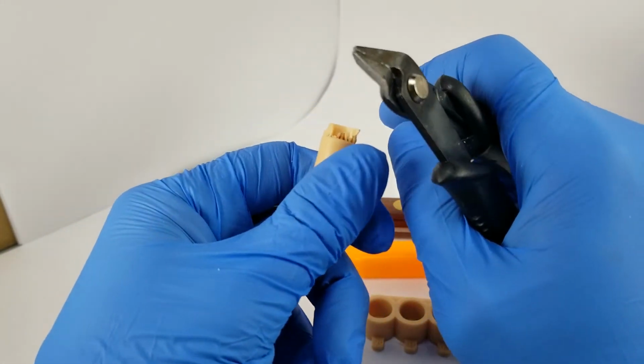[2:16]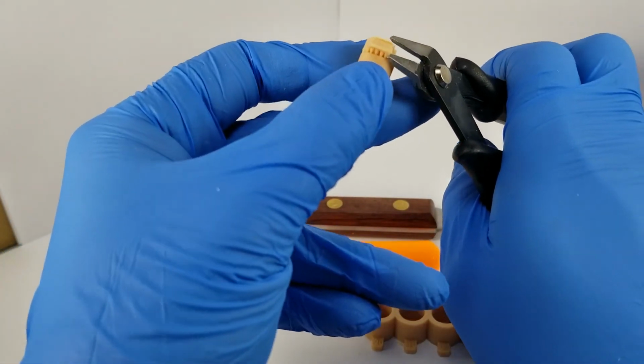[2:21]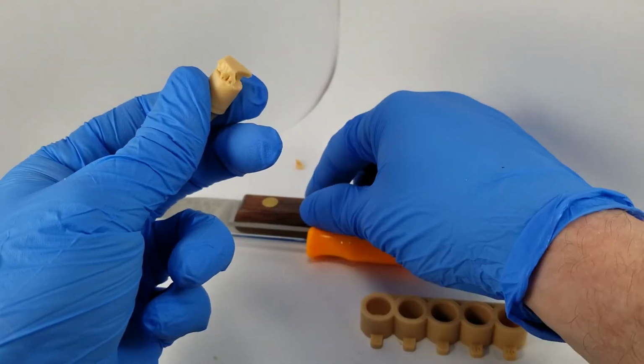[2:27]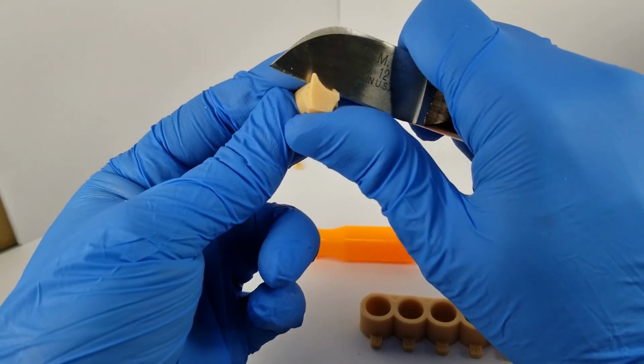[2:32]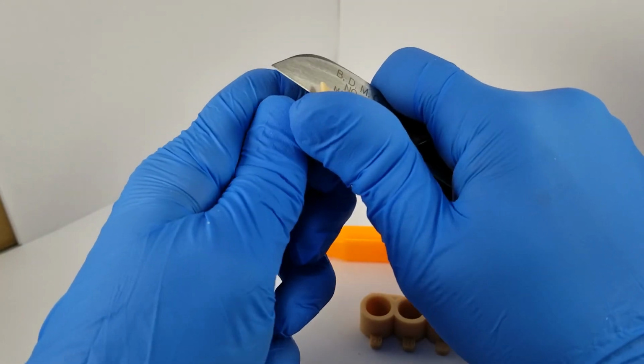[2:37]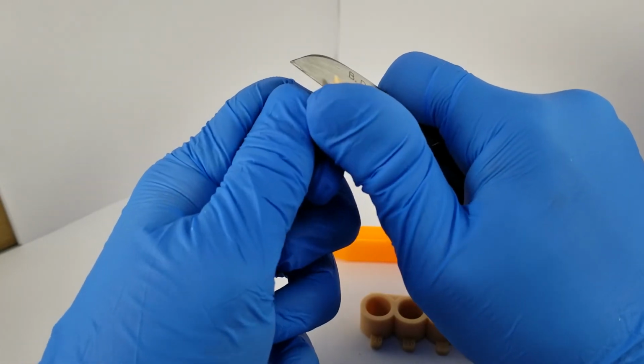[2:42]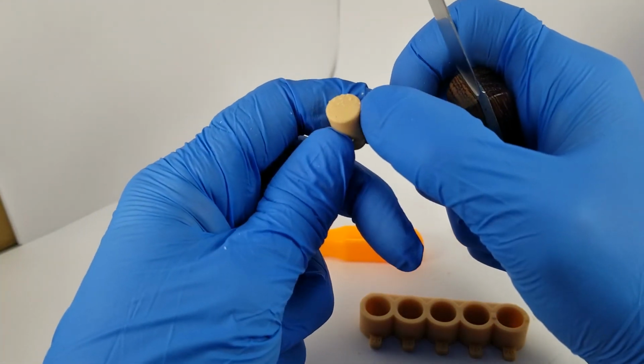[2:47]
So as you can see here, the supports are working their way off as I cut this. And just one thing to note is that they do sort of fly everywhere as you cut them off. I'm just going to get rid of this last bit here. And now we have access to the support structure itself. I take my flat knife and I'm going flat to the bottom of the die, slowly working. You don't want to do it all at once. These supports off. Generally, when you set up these cases on normal cases, like a model or something that you're doing, this is even easier.
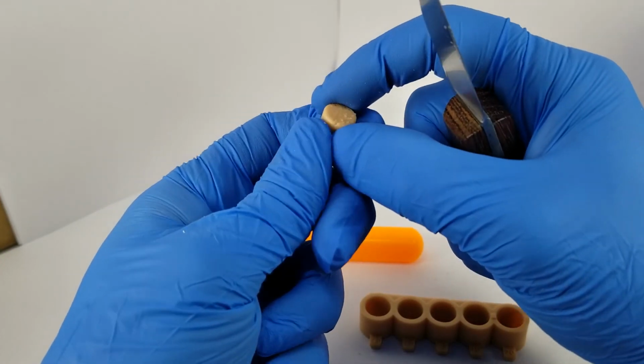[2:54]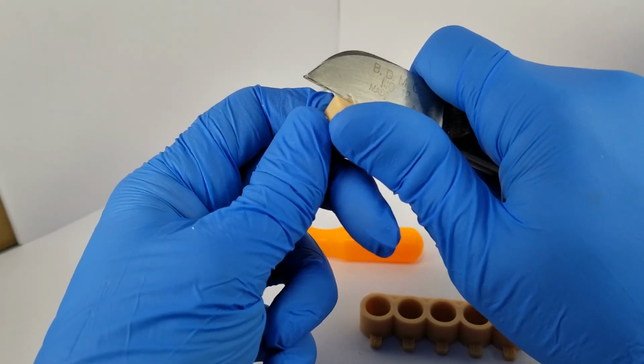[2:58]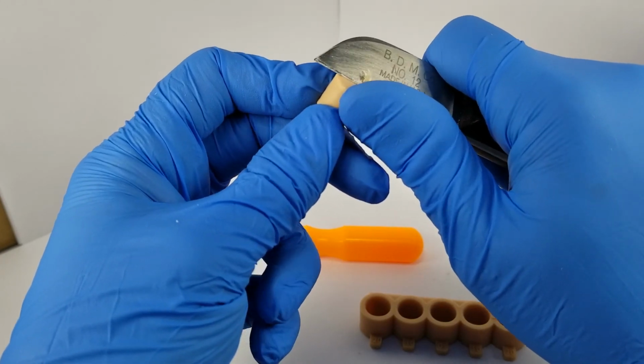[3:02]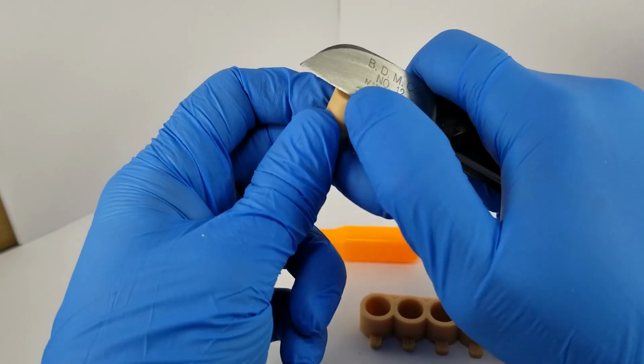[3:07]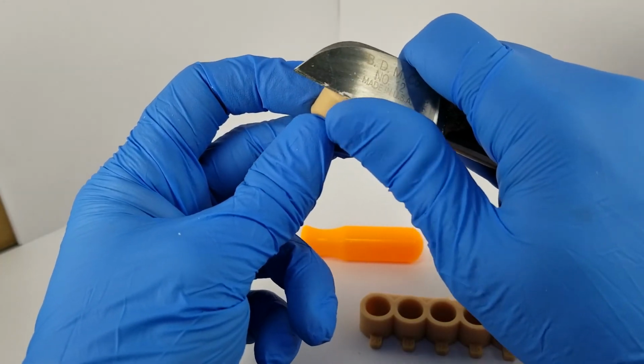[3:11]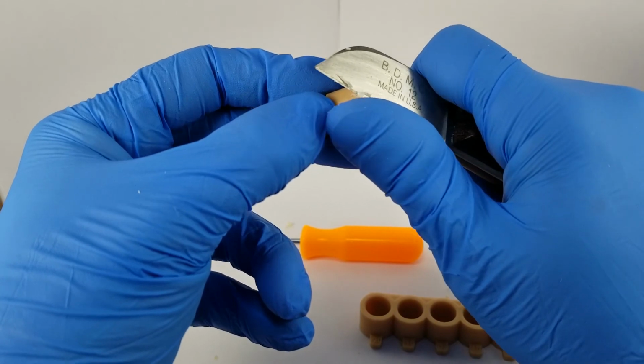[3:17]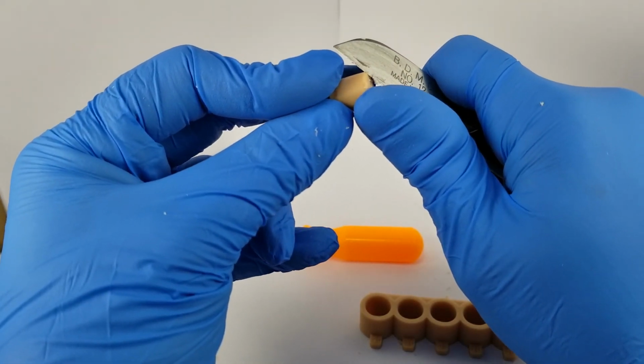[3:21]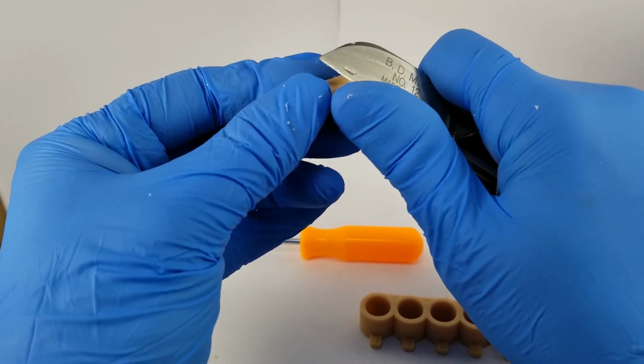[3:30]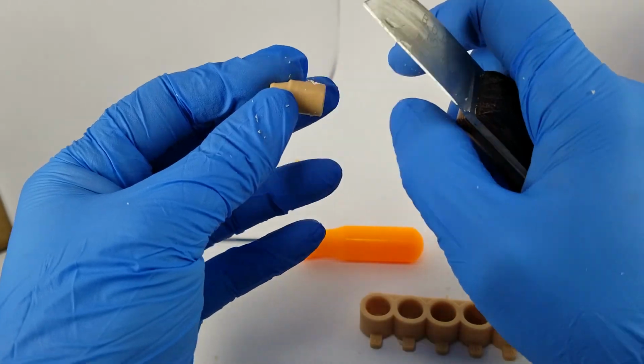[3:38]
You want to make the bottom of the die as flat or flush as possible. There'll be a couple test fits here I'll be showing. But let's start out by just trimming the bottom of the die with my straight blade as flat as possible. Hopefully you can see this pretty well. One other thing to note is you want to make sure the edges of the bottom of this die are free from supports. Over relieving the edges is okay. It doesn't make a huge difference on seating. It's really the outer edge of the flat part of the die that is used for seating. So I'll just go around here quick, make sure I don't have any sharp spots or anything like that that's going to impinge the die fit.
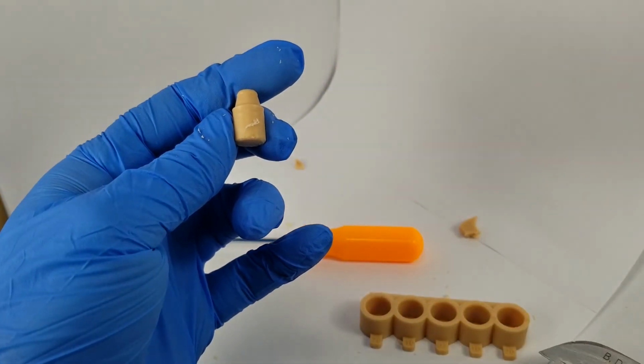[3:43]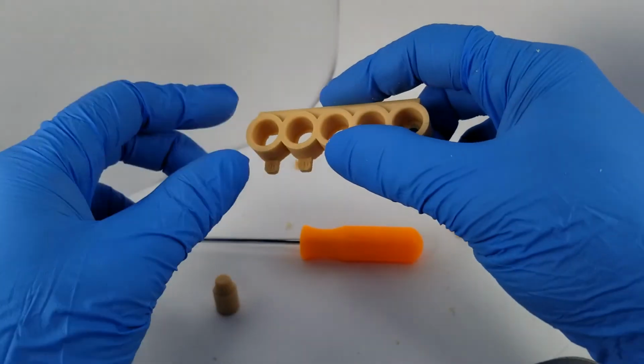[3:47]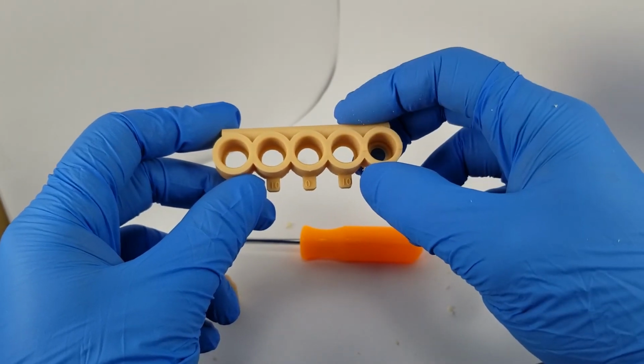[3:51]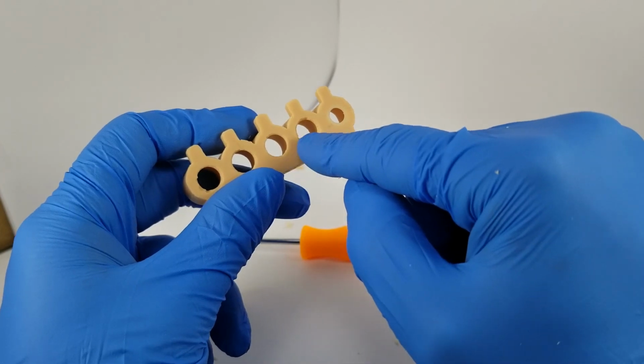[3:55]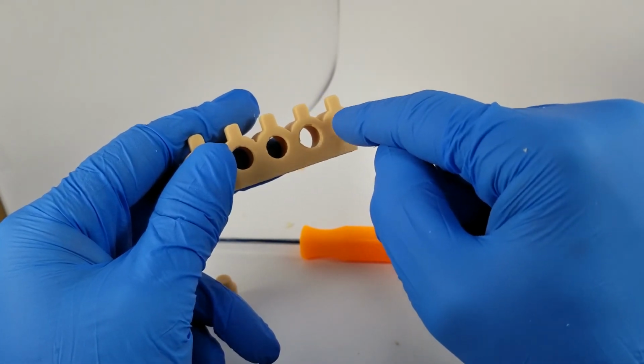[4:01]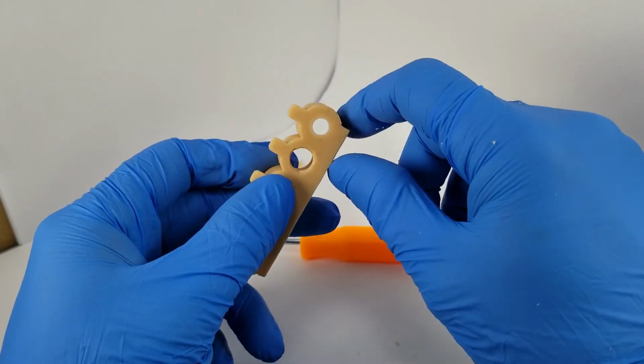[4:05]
So you want to use compressed air. Make sure you get all the debris off of the die. And also, it's important to note that you want to make sure you don't have any debris inside the socket holes. We'll be using the bottom of the sockets to make sure the die is properly seated and flush to the bottom of the socket. So you want to make sure you get rid of the flashing on the inside of the socket here.
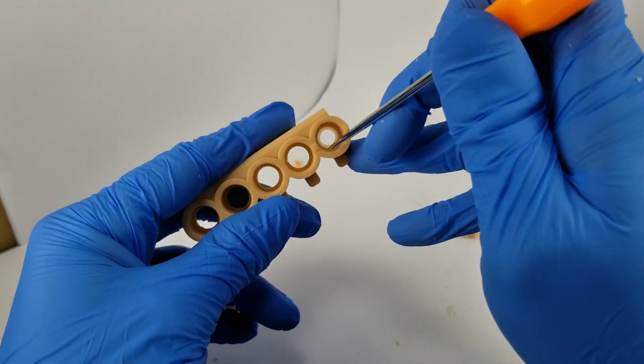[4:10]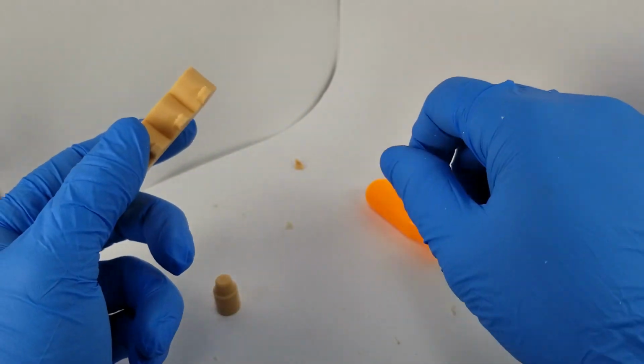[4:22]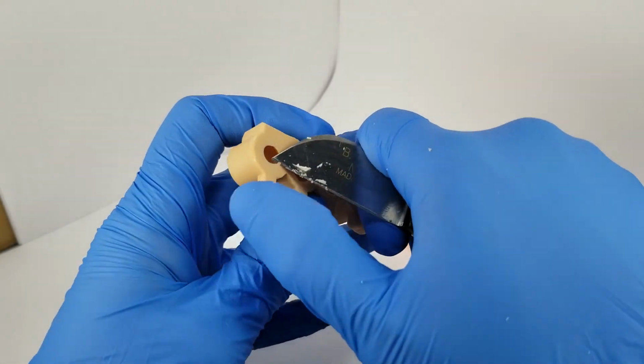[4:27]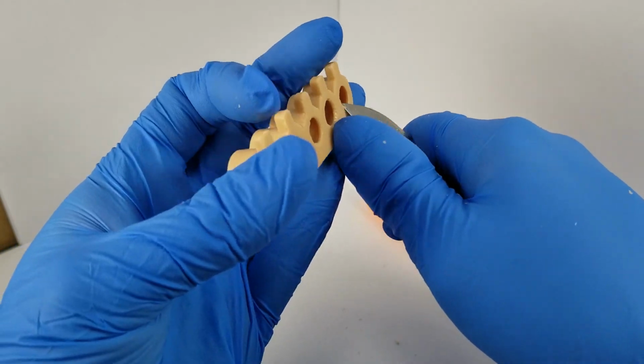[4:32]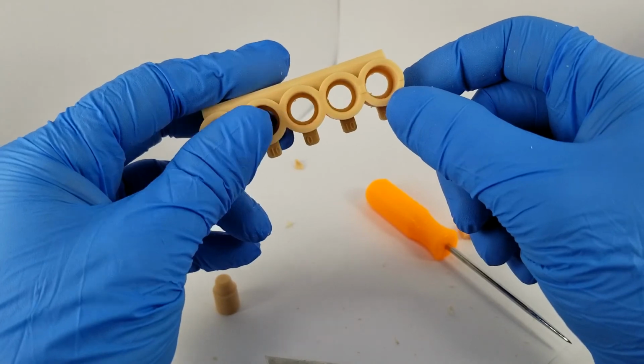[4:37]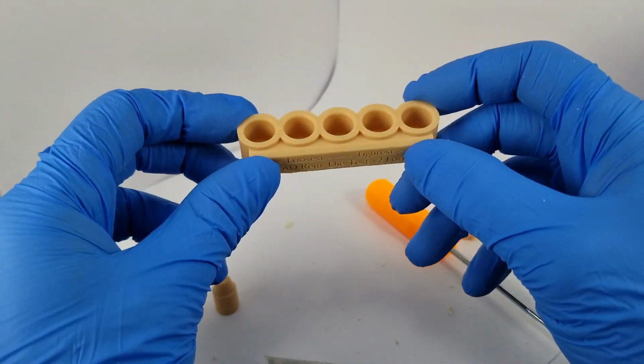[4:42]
You can do this two ways. One that works really well is you can see there that it's pretty clear what's flashing and what's actually not. You can poke around the edges with my awl to get rid of this flashing. Or you can use a dental handpiece, of course, or you can use a knife. And you just trim around the edge of the socket. Pretty easy, pretty quick. Again, the key here is you want it to be clear and make sure there's no debris inside the hole. So that looks pretty good.
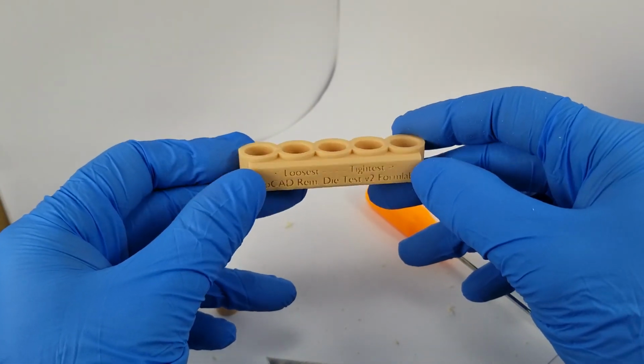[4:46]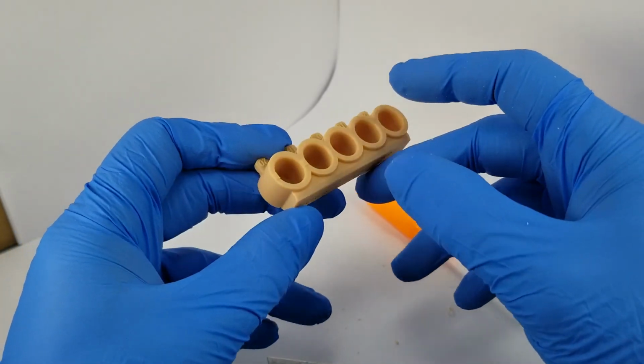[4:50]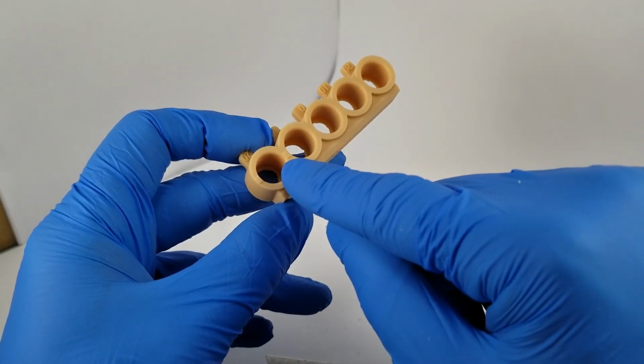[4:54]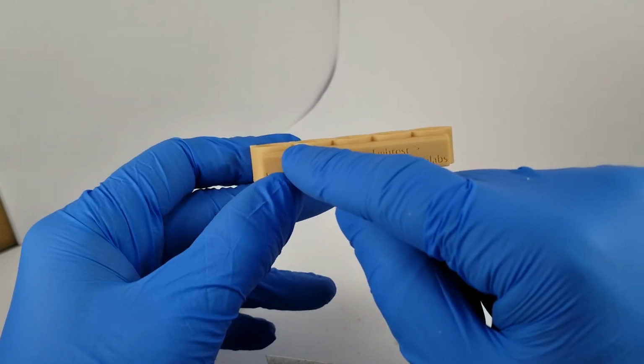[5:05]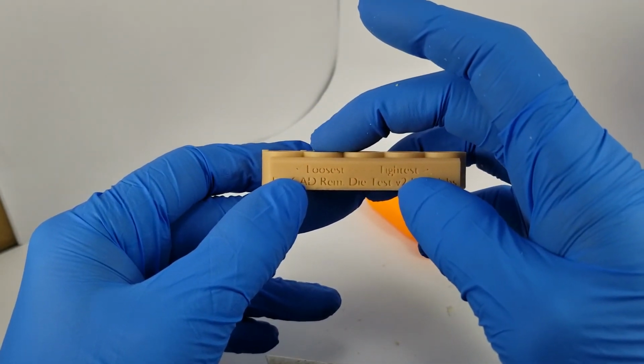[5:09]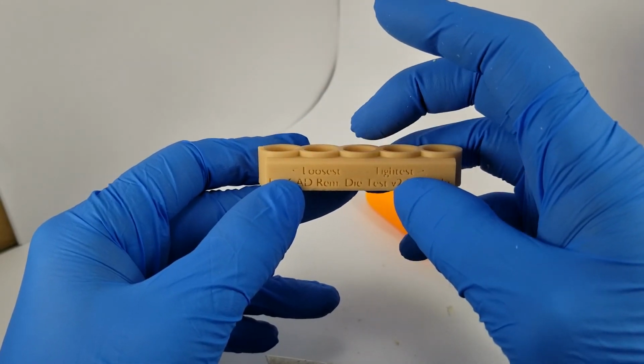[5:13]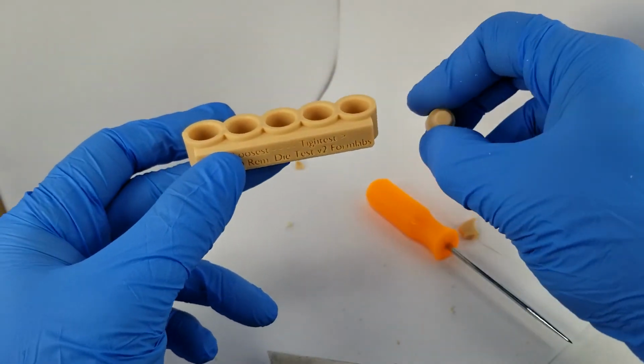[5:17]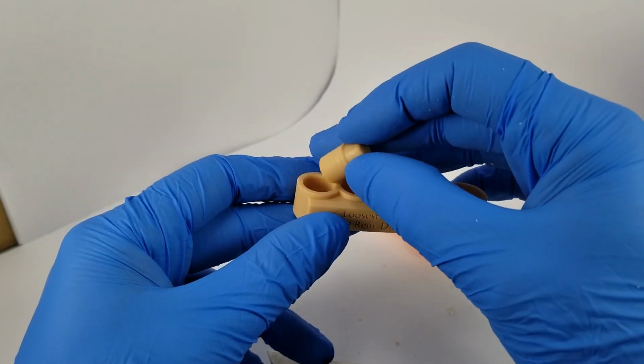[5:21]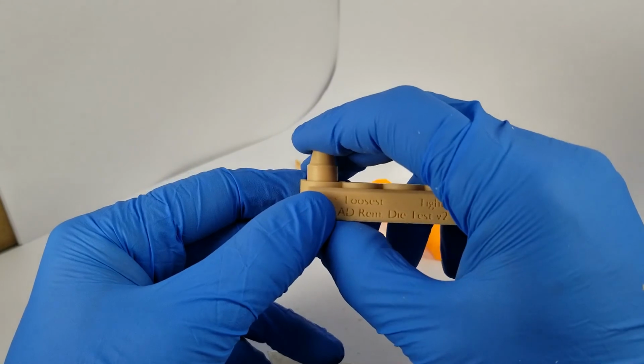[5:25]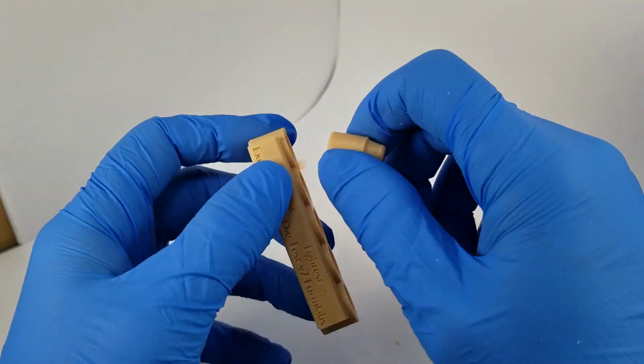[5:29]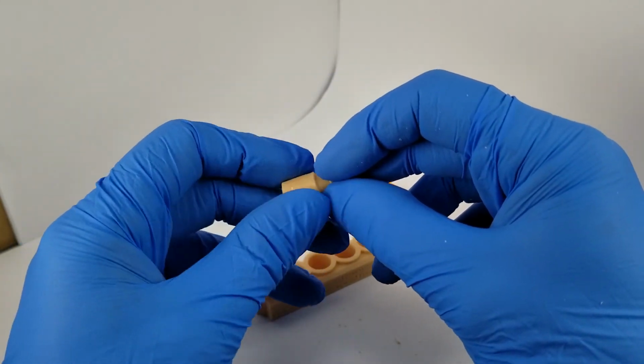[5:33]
Now, before we actually do the fitment testing, there's one thing that I want to note. On the loosest side, which is this side, there's two raised areas. The trimming of the die is really, really important for correct vertical height and seatment. And these vertical shelves here on the loosest should be absolutely perpendicular to the edge of the margin of the die. So this is actually a great test and practice for doing this on real cases for how much you need to relieve. But if you seat this die in, actually I should be using the spray lubricant first before seating so it doesn't get too roughed up and it keeps it a bit more consistent. And again, make sure you get all your flashing off there.
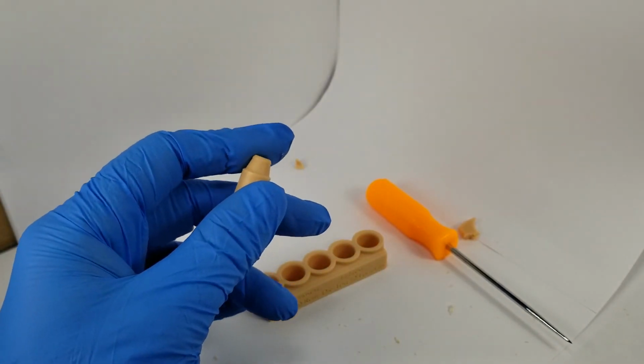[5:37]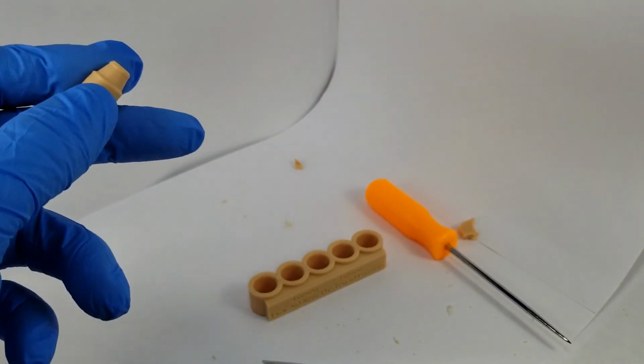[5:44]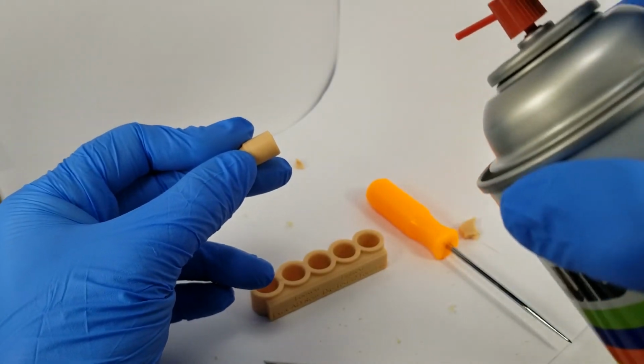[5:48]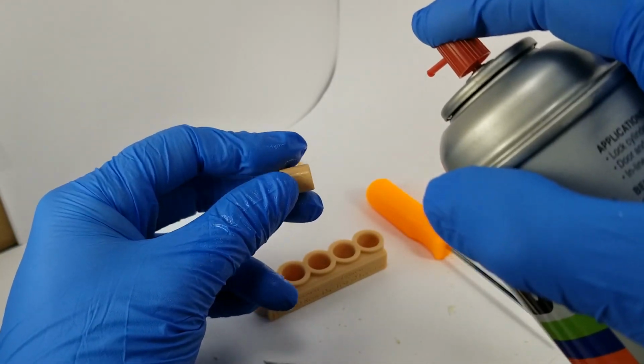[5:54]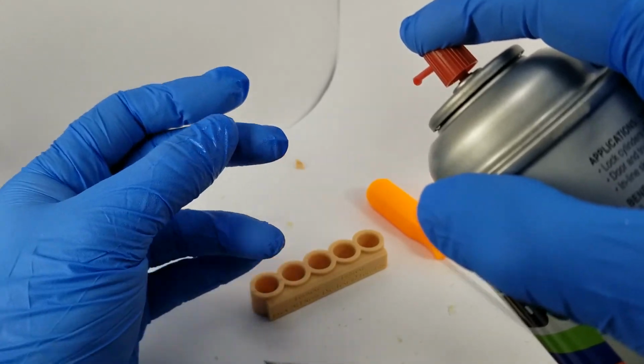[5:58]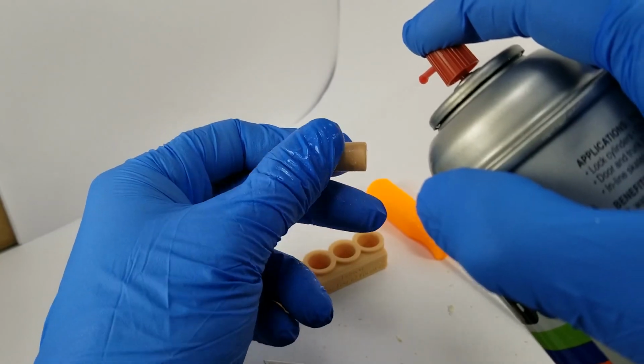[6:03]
So I'll take my dry lubricant and again, make sure you shake it up really well. You want to spray this on the shaft of the die. This is a food grade dry lubricant. So there's really no residue or anything left over that you have to worry about too much, but you just spin it and spray it very, very lightly around the base of the die, or try not to drop it like I did, but it dries completely clear very, very quickly.
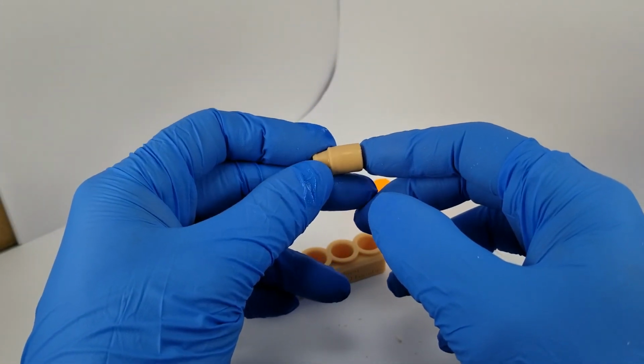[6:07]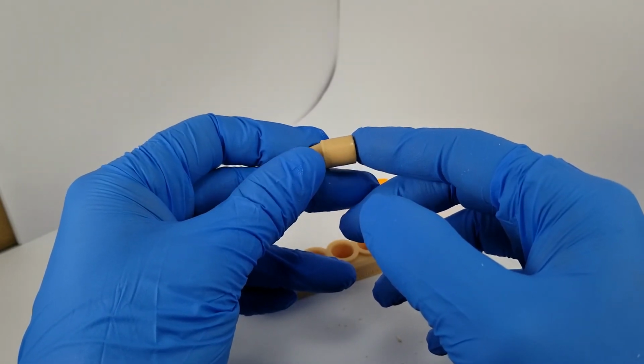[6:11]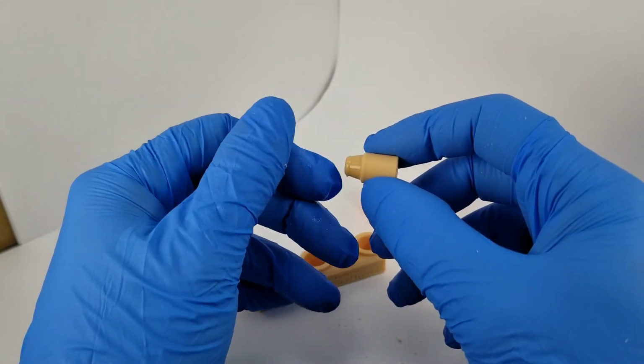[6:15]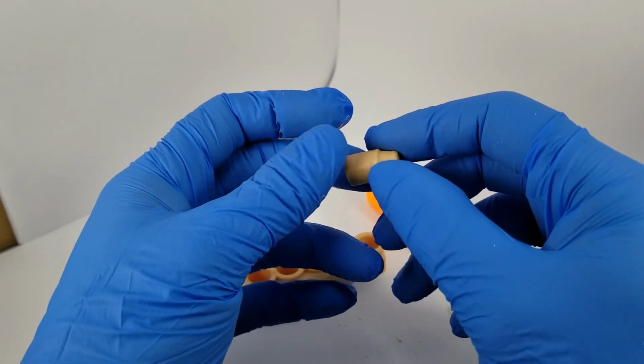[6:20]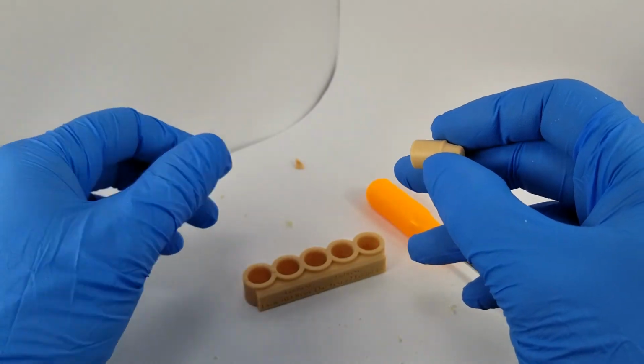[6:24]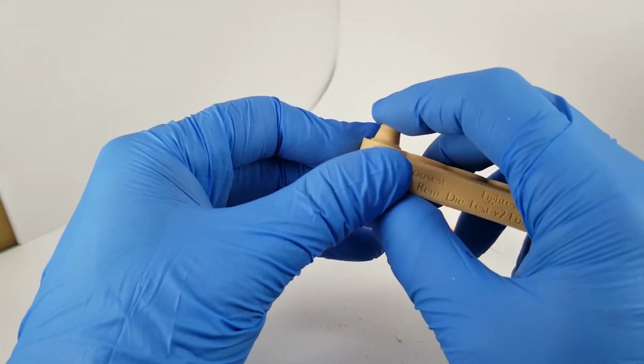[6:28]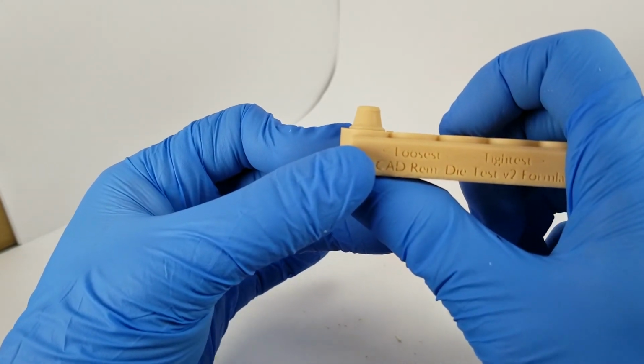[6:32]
You can use some compressed air to make this process a little bit quicker, but it is air drying rapidly as we speak. And now it's got a thin, invisible coat of Teflon, actually. It's the brand name for it. It's PTFE. So now that the dry lubricant is on, this will seat very, very nicely and easily. And you can kind of see it in the film here or the video.
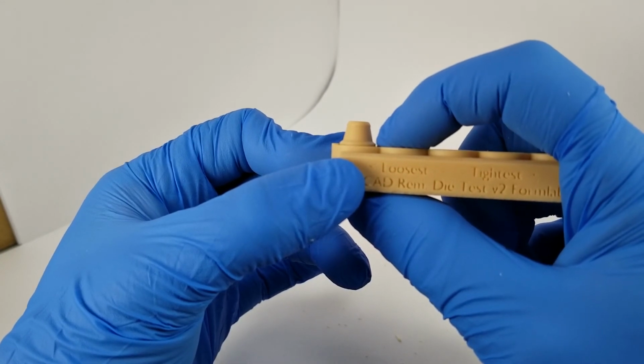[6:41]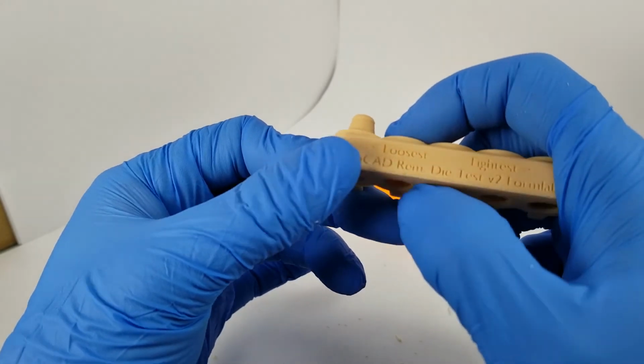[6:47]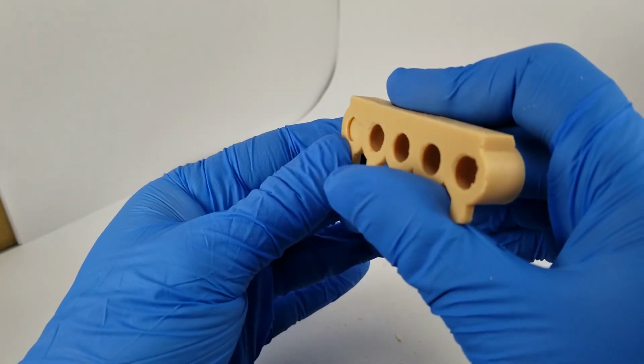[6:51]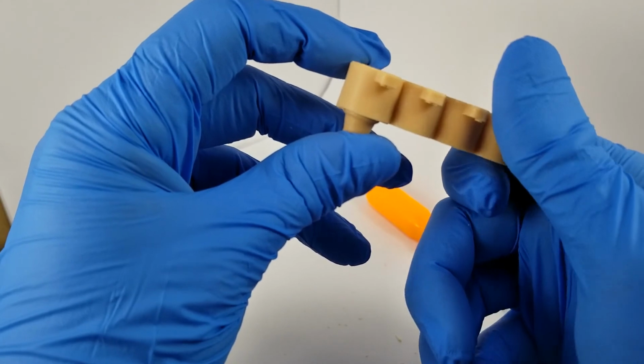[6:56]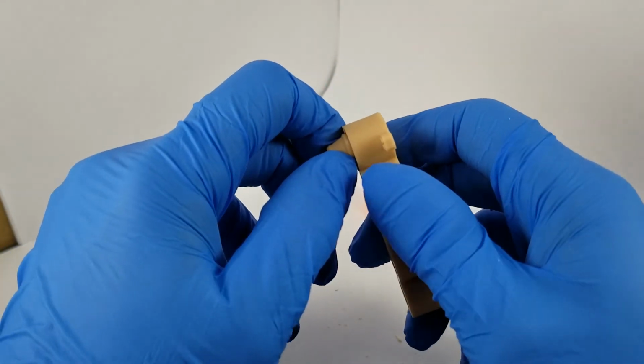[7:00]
You want to see the top of this notch here be completely even with the margin. And if you notice, I'm just a hair high. What that means, and the way you make sure it's seated is you view from the bottom of the socket, we look totally flush and seated around the entire part. We need to do a little bit more relieving on the bottom of that die.
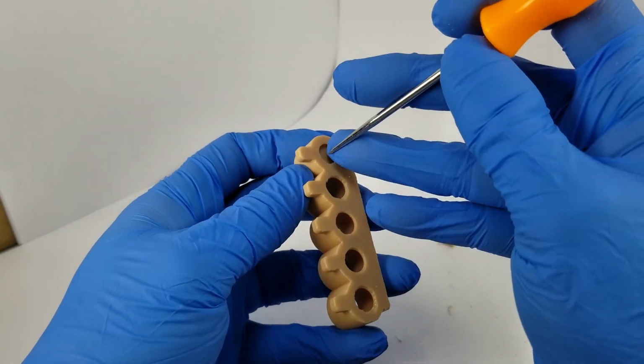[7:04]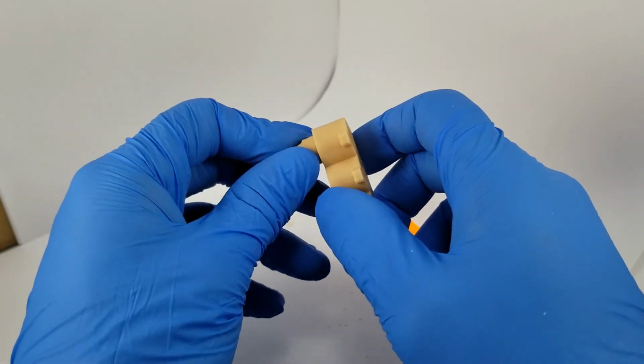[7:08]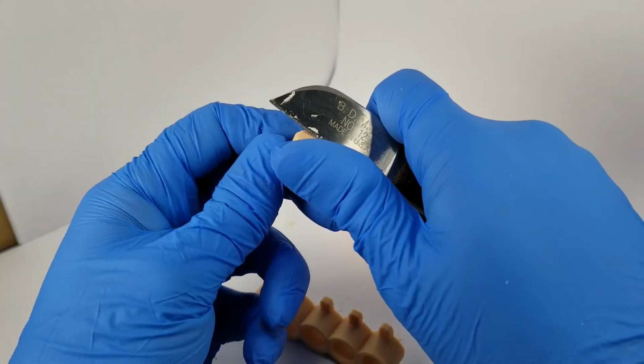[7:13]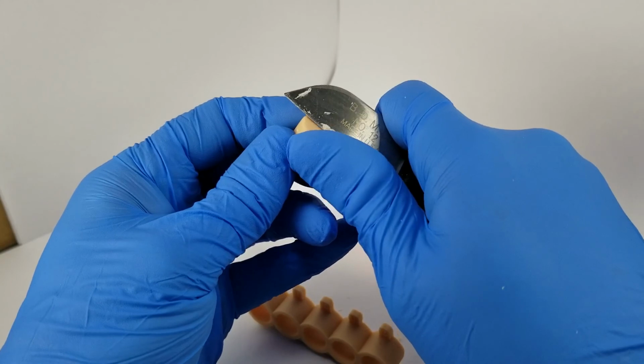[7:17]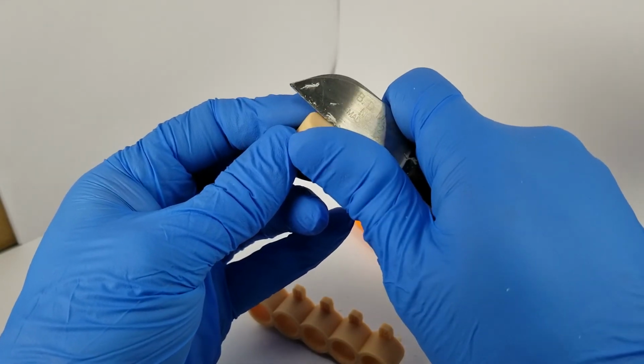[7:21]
Using my awl, it's a really nice tool for poking the dies out very, very easily, or you can use your finger, of course. That indicated to me that I need to relieve just a little bit more material. And the key here is you don't want to do too much all at once.
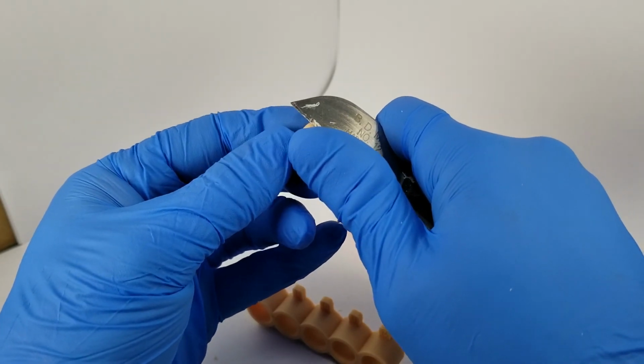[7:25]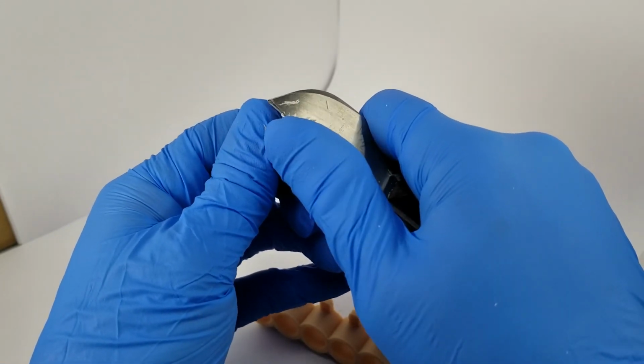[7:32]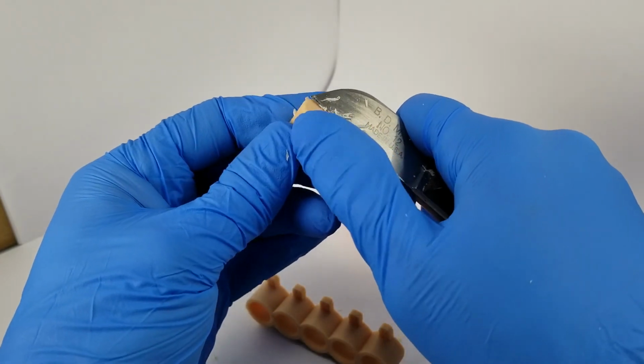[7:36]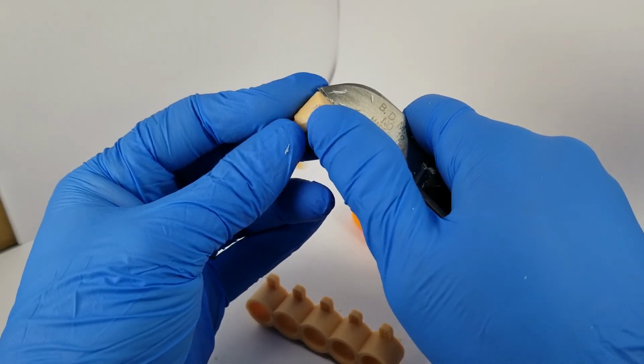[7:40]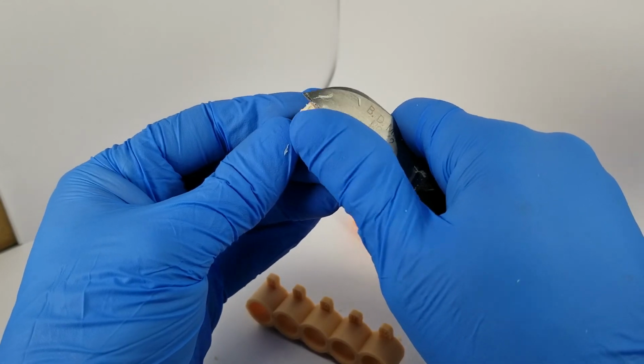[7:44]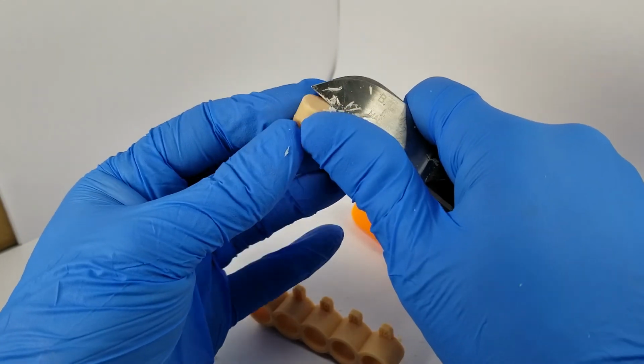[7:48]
If you want to be absolutely certain how much material you're actually using, one recommendation is to print this die and this job twice, and you can have a comparison, like a before and an after. This is really good practice, especially if somebody is, say, starting at your lab or practice. Have them do this test, even if you know your setting, because this will give them a really good idea on what to do with real cases.
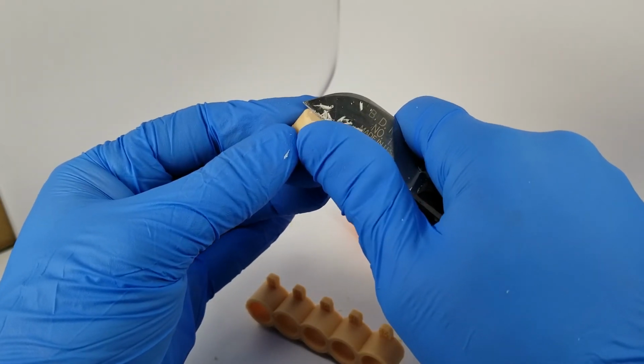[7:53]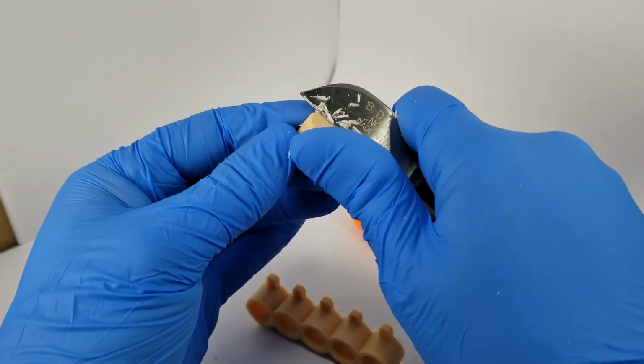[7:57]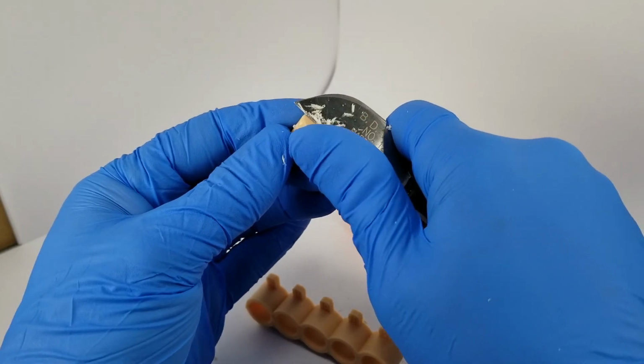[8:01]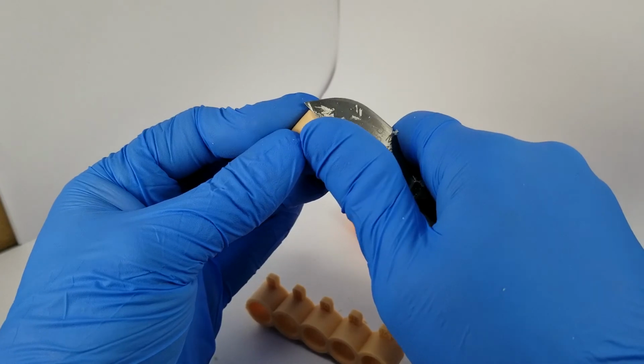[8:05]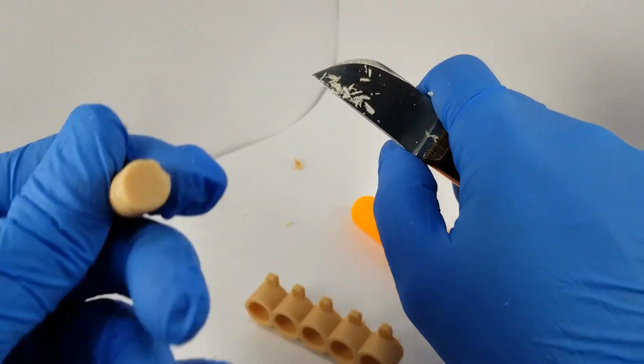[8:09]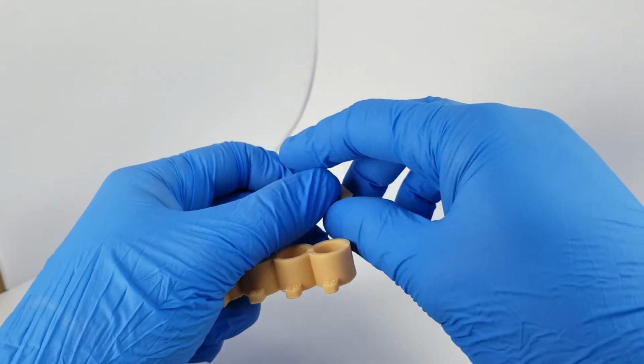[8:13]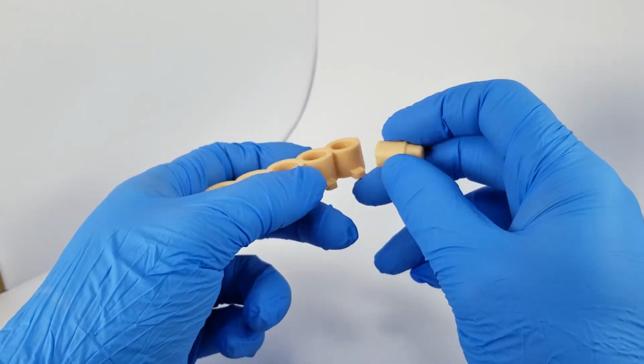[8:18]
So just a hair of a trim here. Try to make it as flush as possible. That's why I'm using a straight blade here. Of course, a Bard Parker would work, or if you prefer a dental handpiece, whatever you want to do. But I like this flat blade. I have it linked in the guide. Make sure all your debris is off. Okay, so I just blew off some of the debris and I also applied one more coating of super lube.
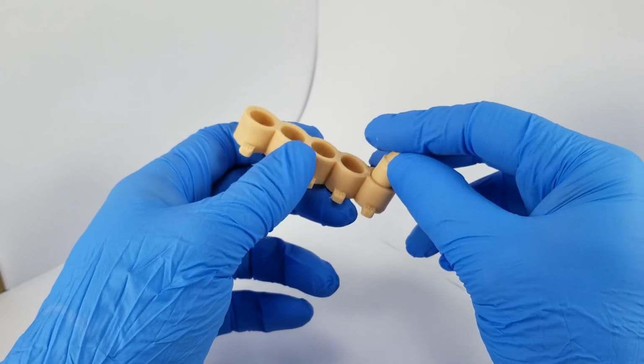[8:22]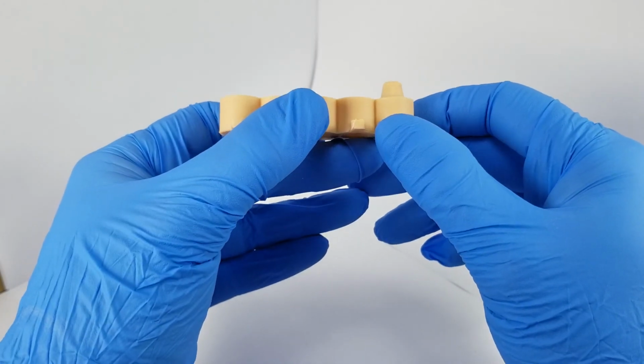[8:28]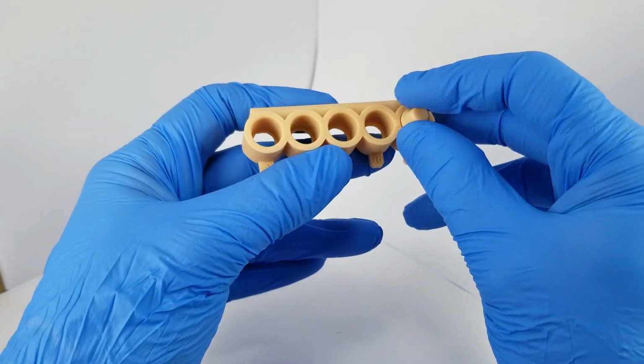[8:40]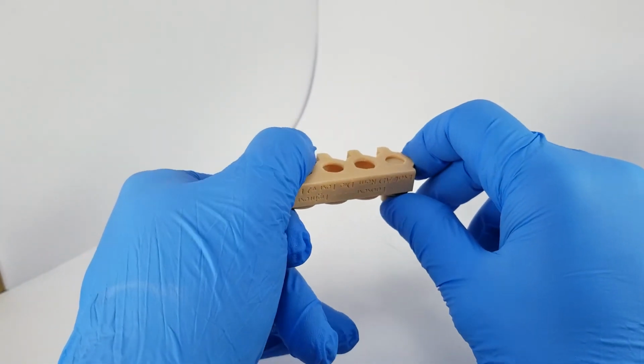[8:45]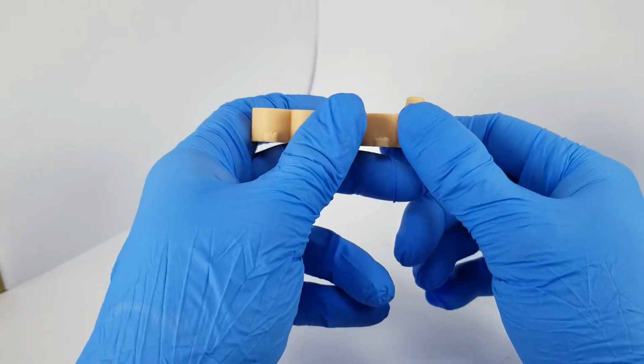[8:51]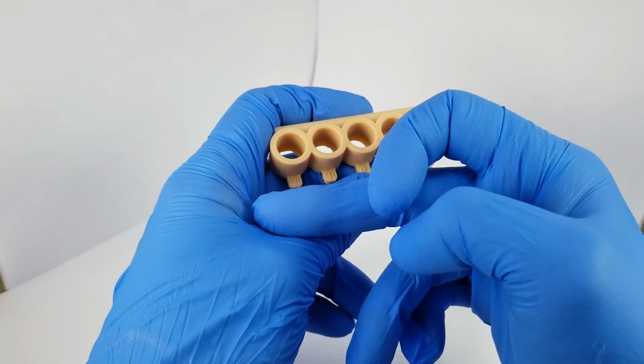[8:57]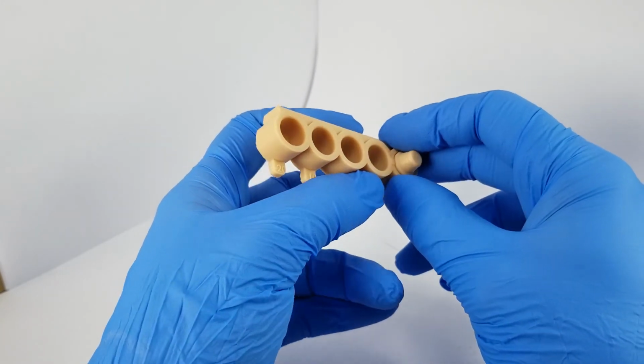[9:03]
Now I'm going to fit it on the loosest socket here, which is 20. And this goes down really nice. And you can see, hopefully on camera, the alignment of this notch to the margin looks really, really good. I'll include a photo of it in the guide. Now that we have the seating happening correctly, and you can check the bottom of the die, it is seating correctly around all sides of it, we want to go from the loosest, which is 20, to the tightest until we can't fit it anymore. Or it fits, but it's so tight that it's really hard to remove.
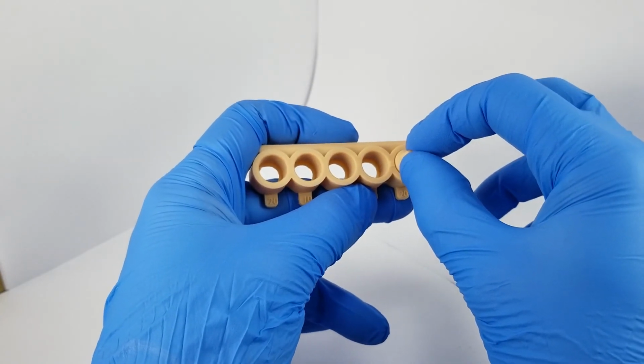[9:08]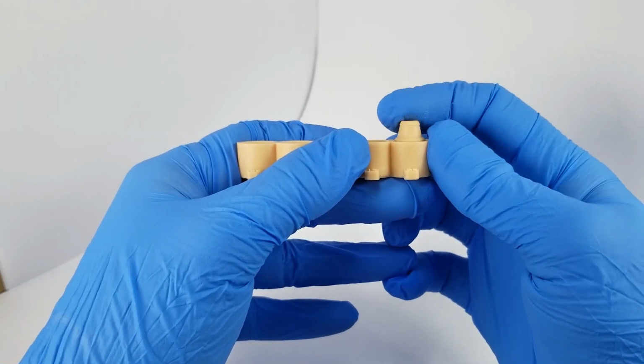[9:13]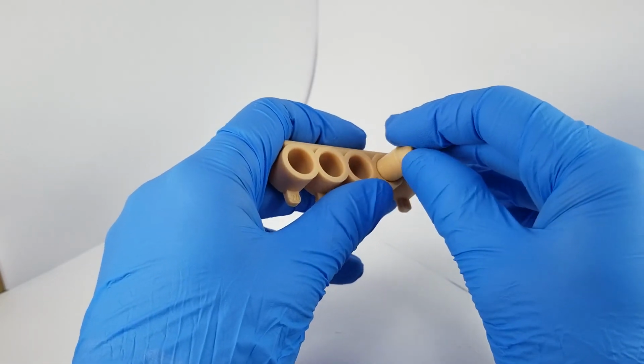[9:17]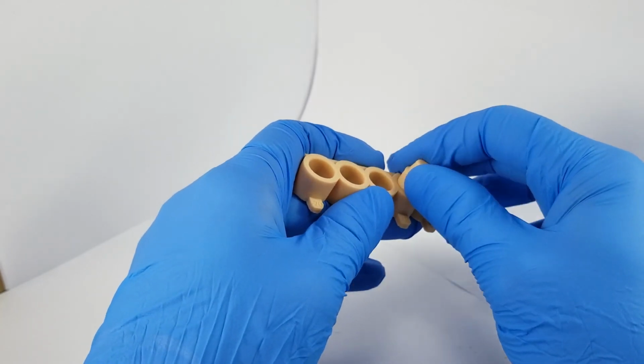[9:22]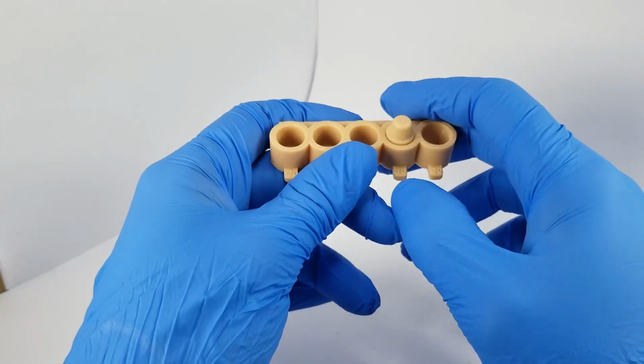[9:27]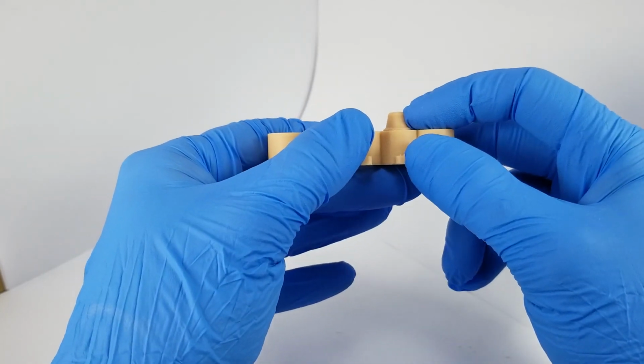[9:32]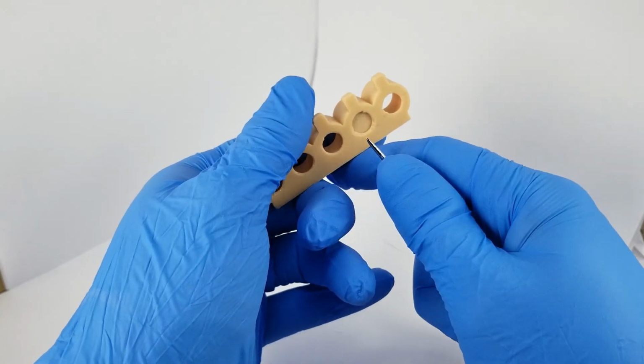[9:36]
So that is too loose, and you can tell because you can wiggle it. I don't know if you can see this really, but it moves in this socket just ever so slightly. So this is not our setting, but let's move it up to one more tighter, 10 microns tighter. And this is actually really feeling pretty good. Oh, it snaps right into place. That's really pretty nice there at 10. And it doesn't really move. It moves a little bit. So I would probably want to go one notch higher than this, maybe two.
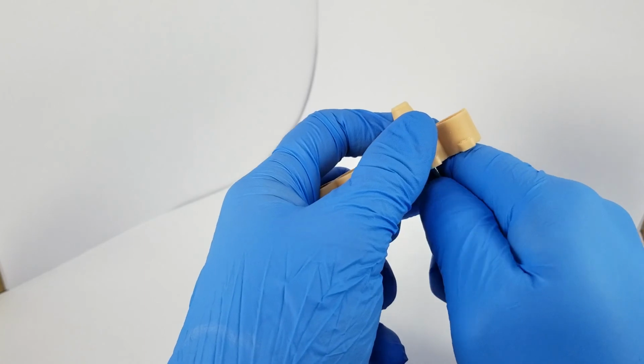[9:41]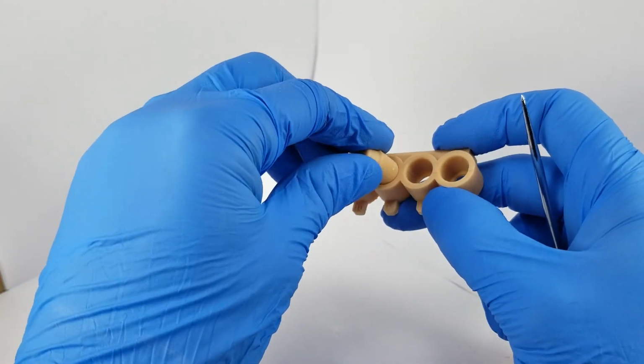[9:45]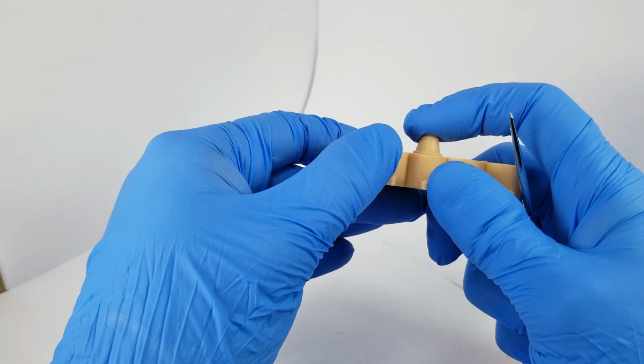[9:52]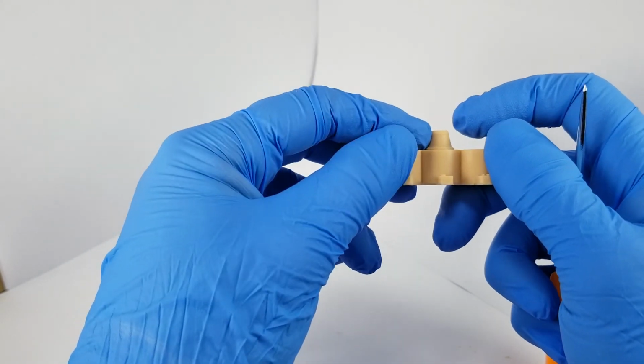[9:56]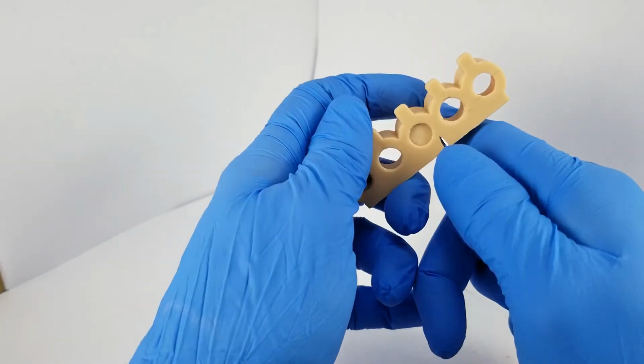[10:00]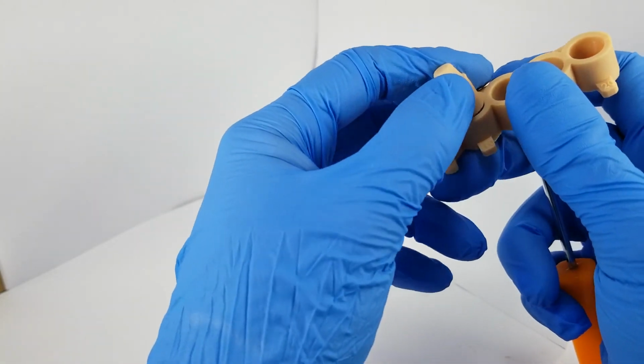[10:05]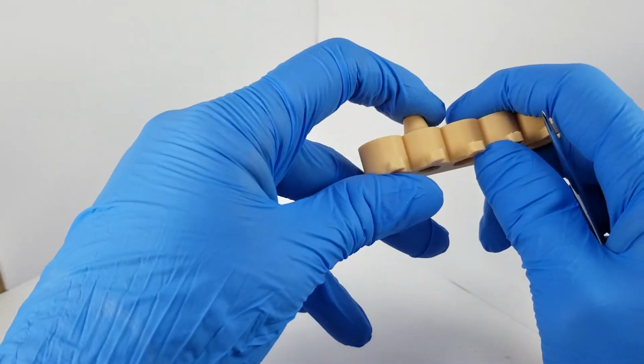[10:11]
But let's see. Let's get this out. That felt pretty good there. But let's get this into this next socket, which is zero, sort of the mid-range on tightness. And that snapped down pretty well. It is not rotating, and it's moving just a hair. Let's see how hard it is to get out. Really not hard to get out at all. So let's see if I can get into the negative 10 micron offset here. And that's snapped in.
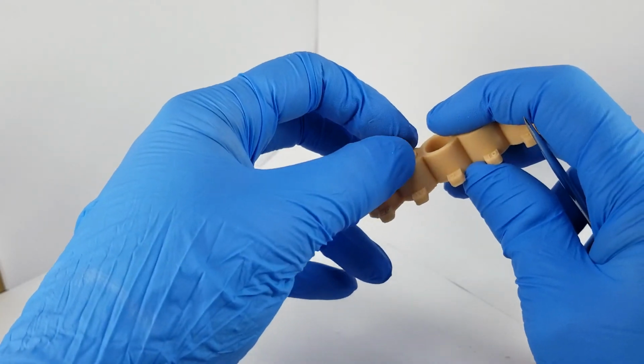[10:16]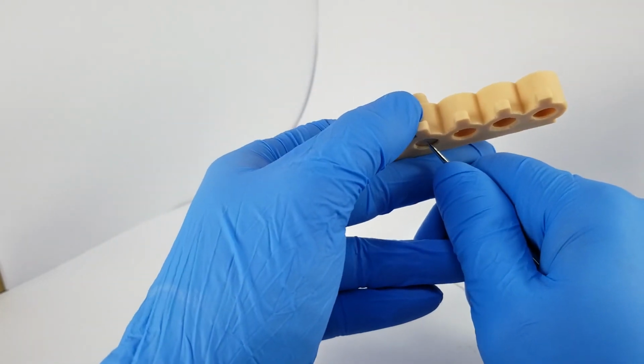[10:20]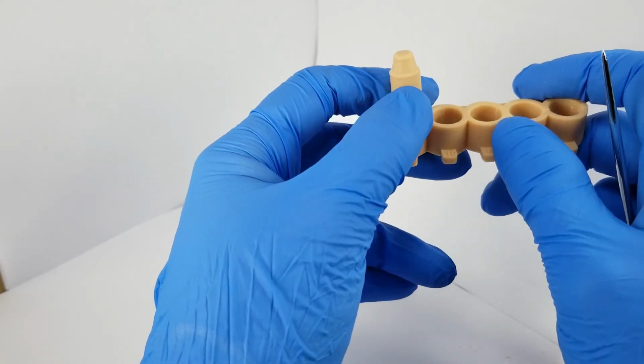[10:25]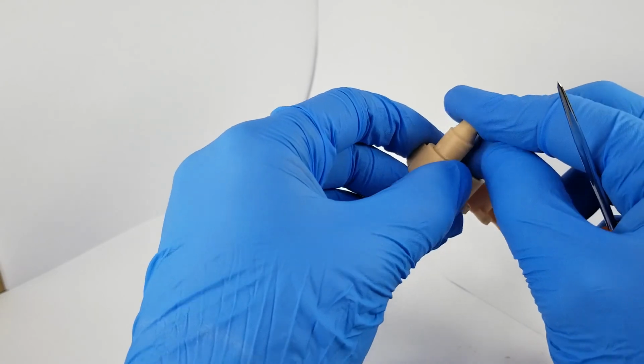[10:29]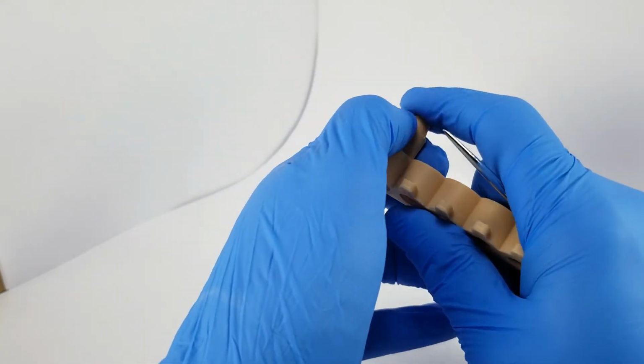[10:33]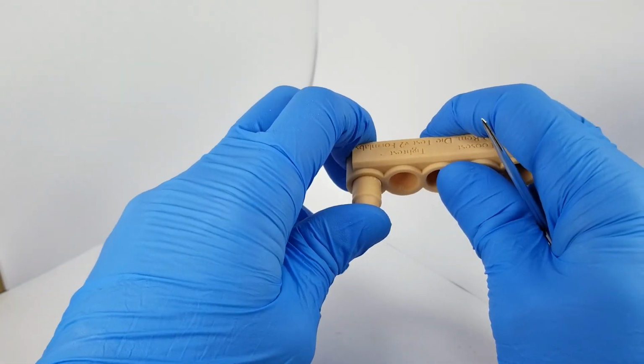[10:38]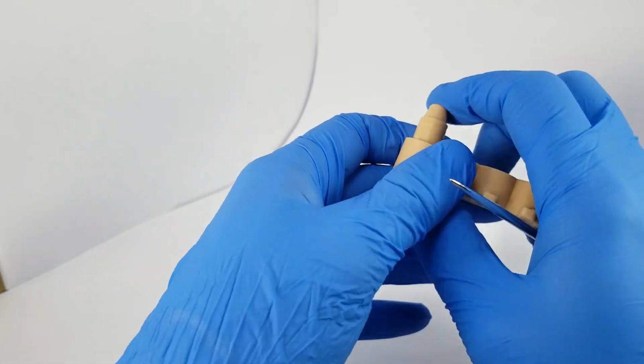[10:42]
That is not going anywhere either. There's no rotation, no movement. It feels to me like this is the setting that I want to go with. And you can still get it out. It's not a problem to remove. Maybe just for fun, try to get it in the tightest. Every time you insert a die, it does lose a little bit of the spray dry lubricant. But I could probably force that in if I really wanted to. But I don't think I'd ever be able to get it out.
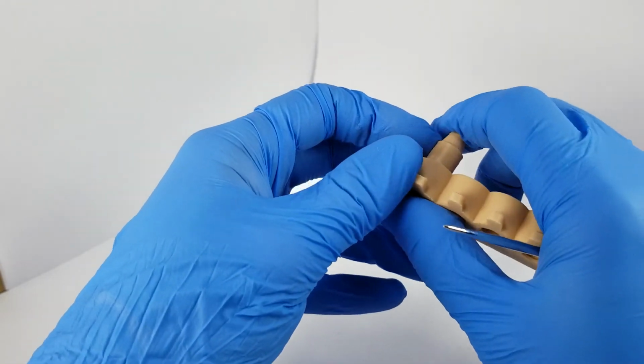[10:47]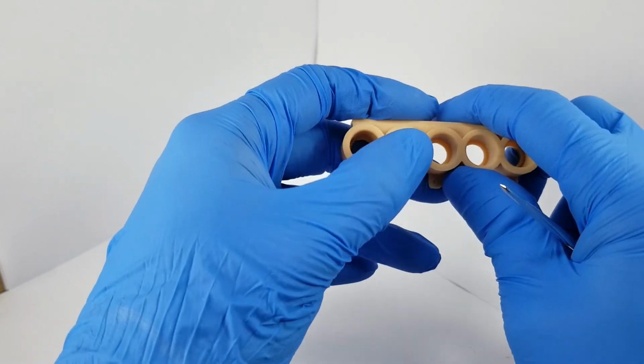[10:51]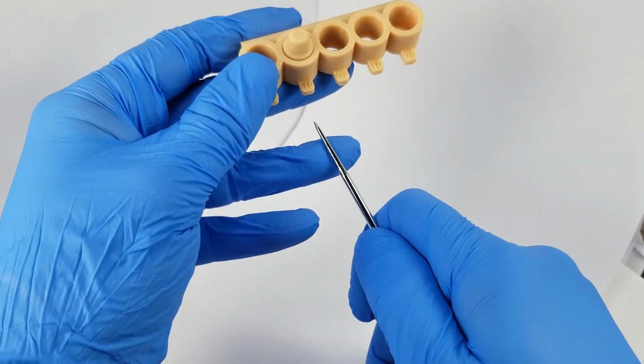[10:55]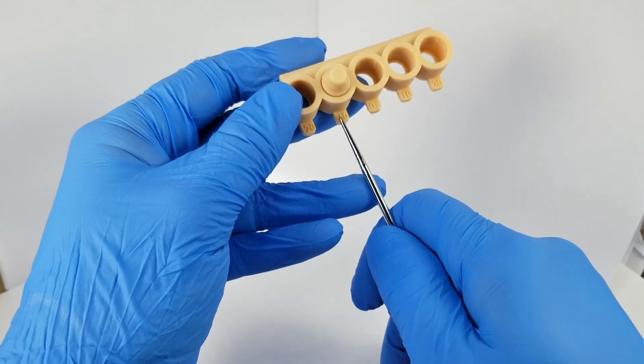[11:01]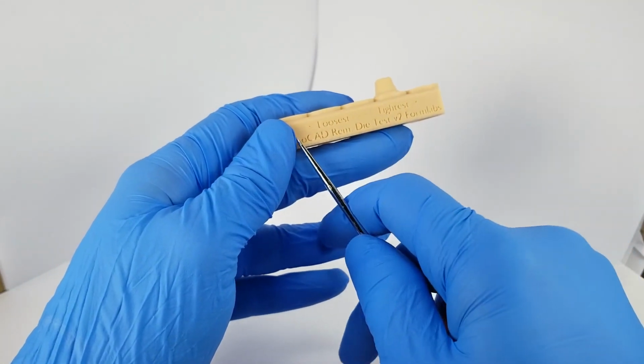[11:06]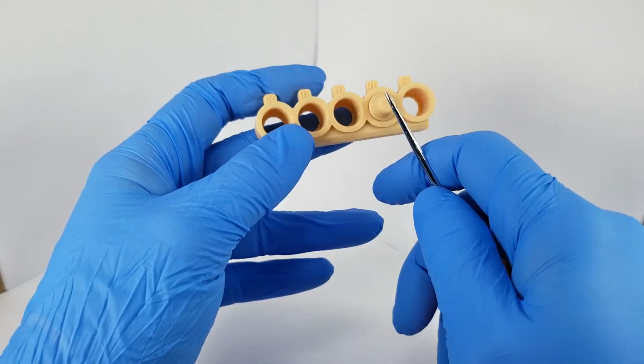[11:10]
So this is it for me. I think this is a clear choice here, that this is really rock solid in there. It's not moving around at all. For me and this printer and my personal preference, negative 10 is where I want to be. So again, we work from loosest to tightest to where you are comfortable and the die is not moving. And again, this is negative 10. So refer to the guide.
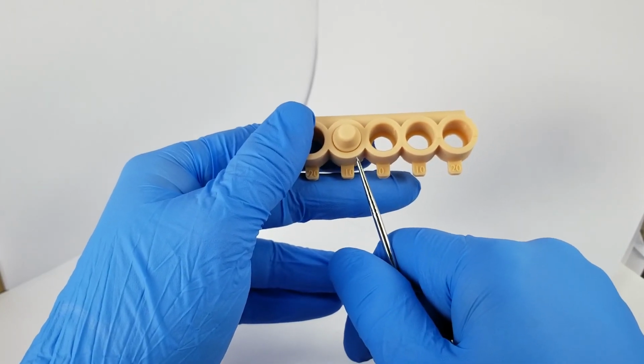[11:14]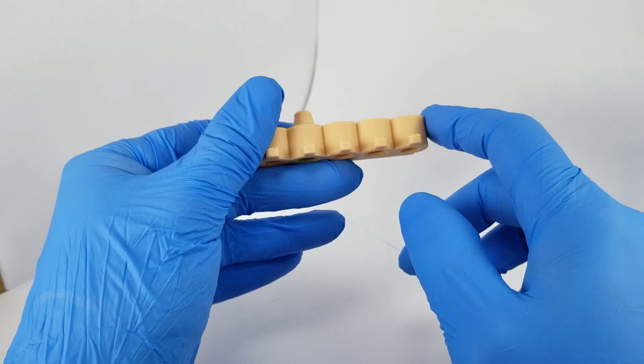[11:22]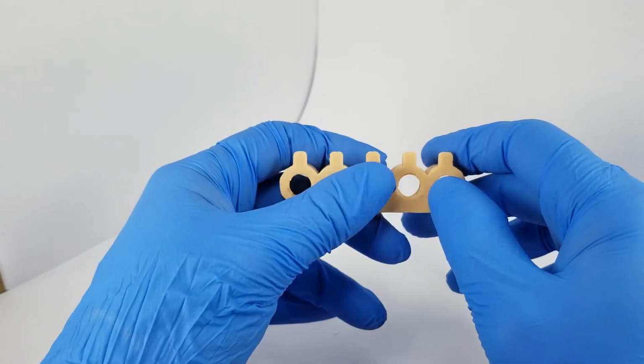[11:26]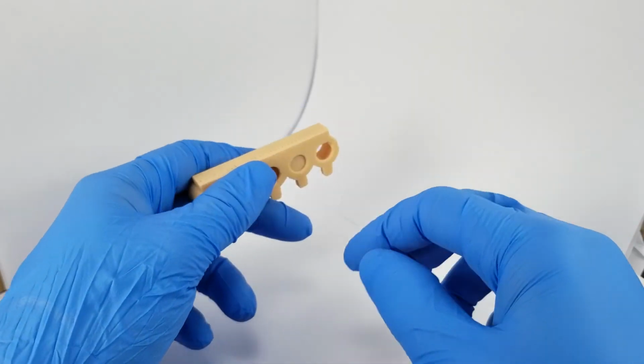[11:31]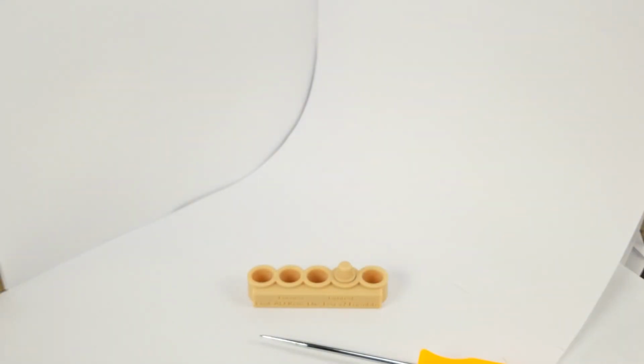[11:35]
But now when you set up and create your model in ExoCAD, this is the Form 3B setting that you want to use. And we know we have the alignment of the die into the socket, and generally that is the best practice moving forward for these models. So that does it. That's how you get to determining the proper offsets for ExoCAD.
Hopefully this is helpful. There'll be even more visual and other information in the written guide for this workflow and the links to the file so you can print it and everything else.
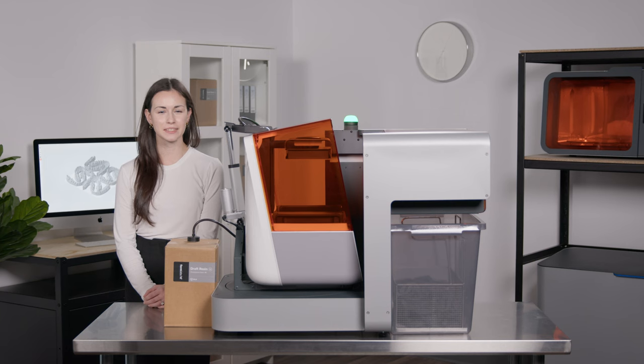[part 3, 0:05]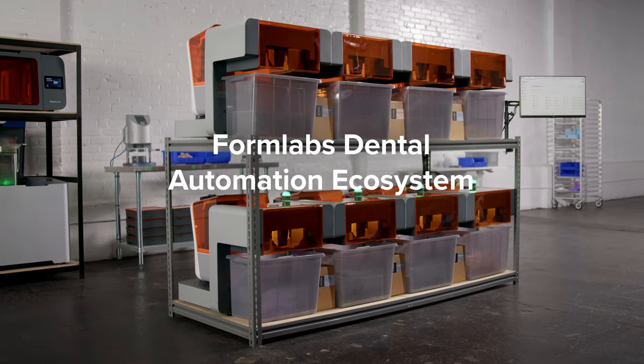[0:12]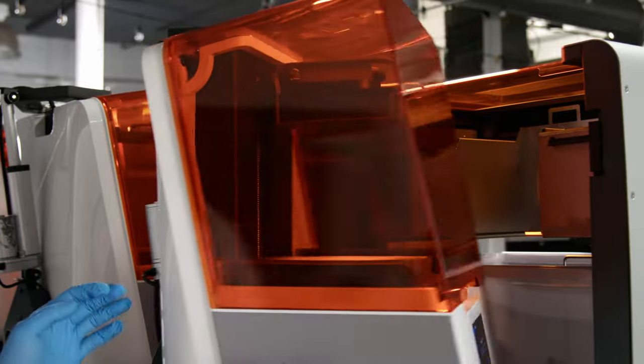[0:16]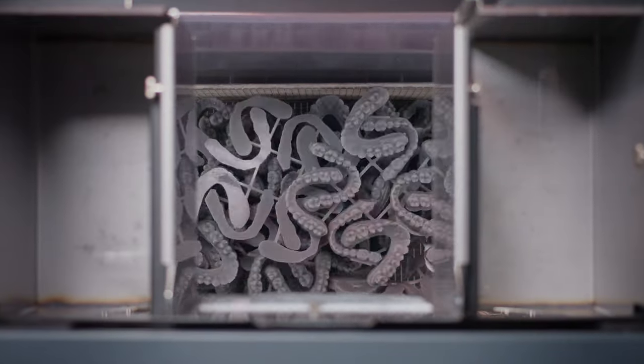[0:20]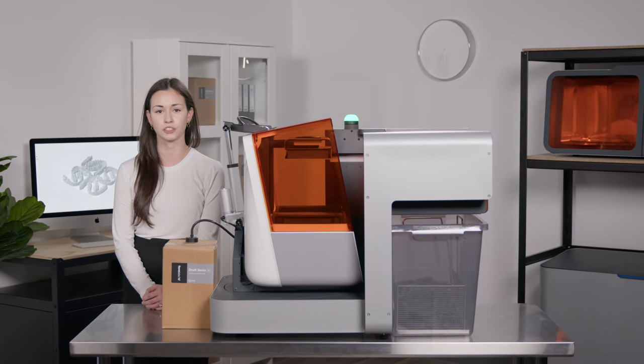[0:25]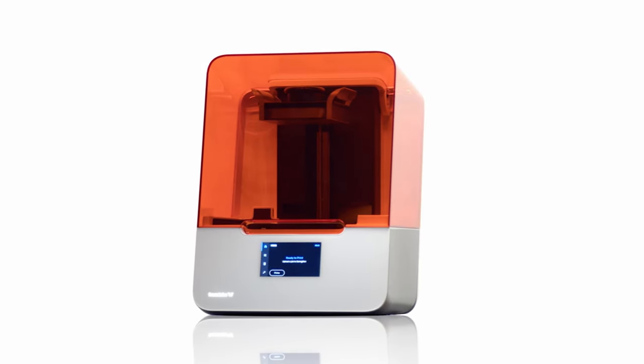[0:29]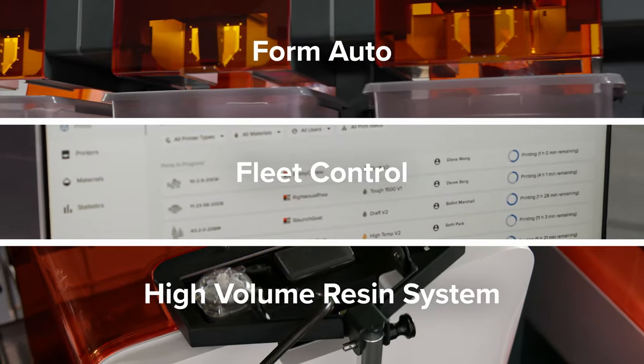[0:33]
I'm excited to introduce you to Formlabs Dental Automation Ecosystem, which transforms your 3D printers into autonomous fleets for 24/7 dental model production made easy. Today, I'll show you how simple it is to set up and use with our flagship 3D printer, the Form 3B Plus, which boasts industry-leading print quality and unmatched seamless workflow. But first, let's take a look at each new tool.
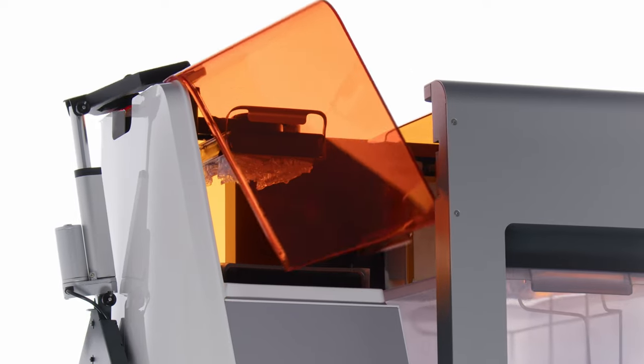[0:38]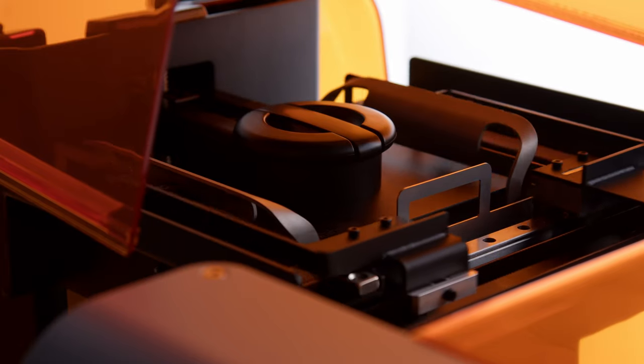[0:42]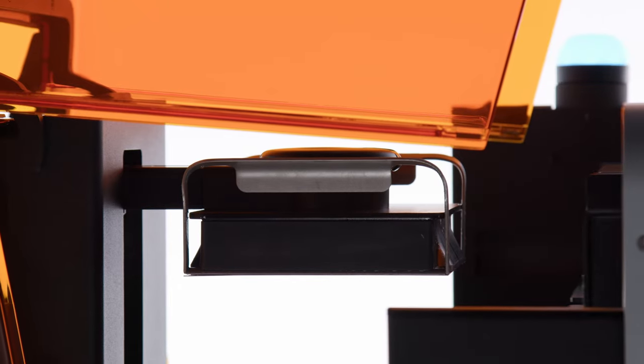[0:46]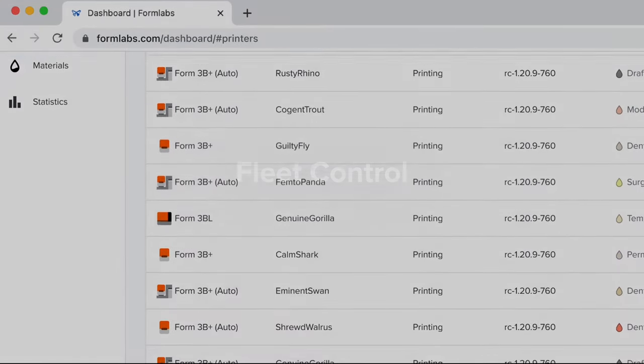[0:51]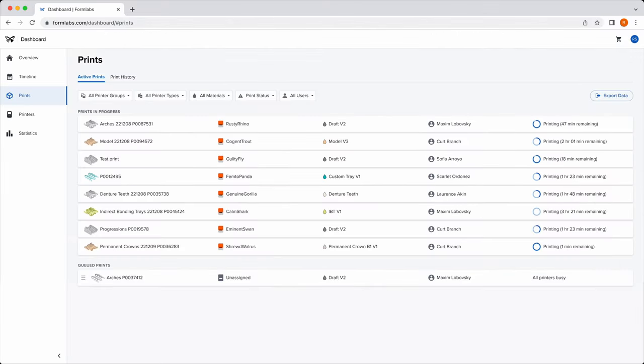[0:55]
At the center of the ecosystem is Form Auto, an extension of your 3D printer that enables continuous printing without interaction by leveraging Build Platform 2's patented quick release technology. Meanwhile, Fleet Control allows you to easily group, manage, and control your printer fleet using advanced features within Dashboard, our printer management software.
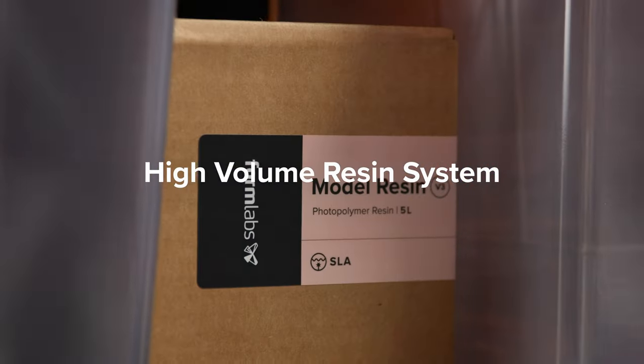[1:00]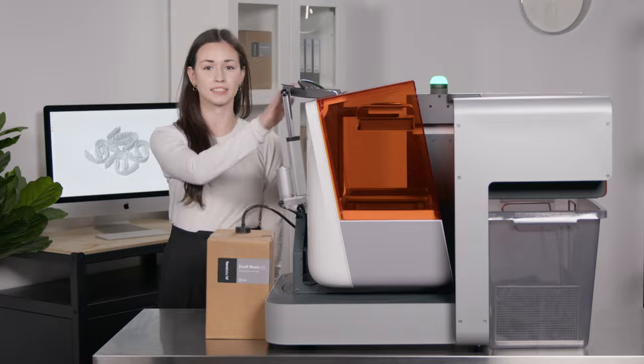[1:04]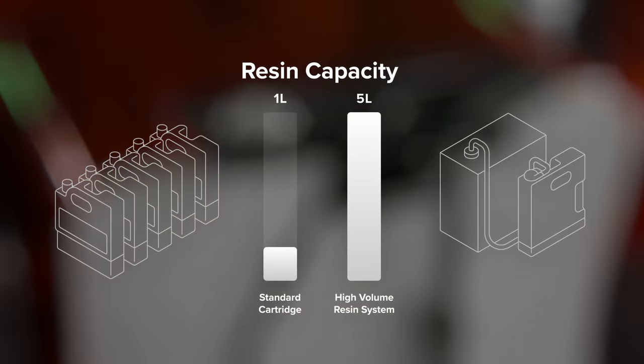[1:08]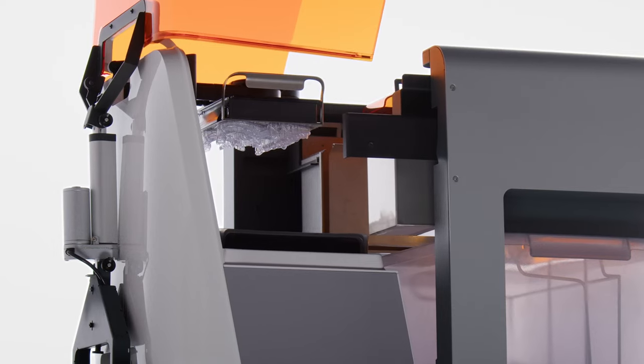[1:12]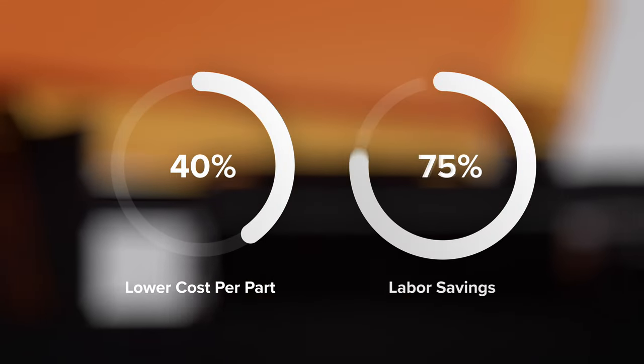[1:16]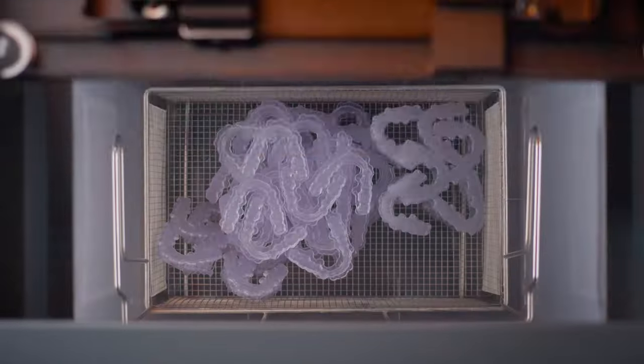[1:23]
Lastly, let me introduce you to our High Volume Resin System, which automatically pumps resin directly into the resin tank, enabling 5 times longer throughput, reducing plastic waste, and making frequent cartridge refills a thing of the past. Together, the dental automation ecosystem reduces cost per part with labor savings of up to 80% and allows you to print up to 3 times more dental parts in-house in just one daily shift.
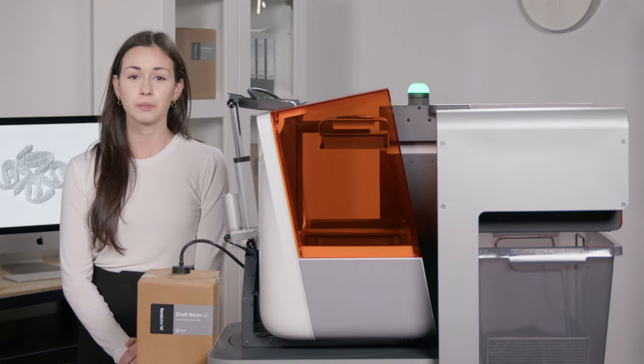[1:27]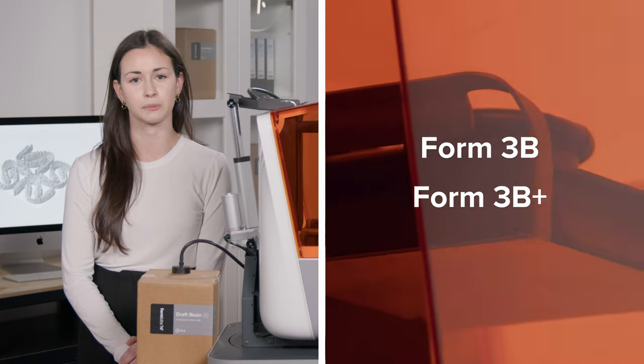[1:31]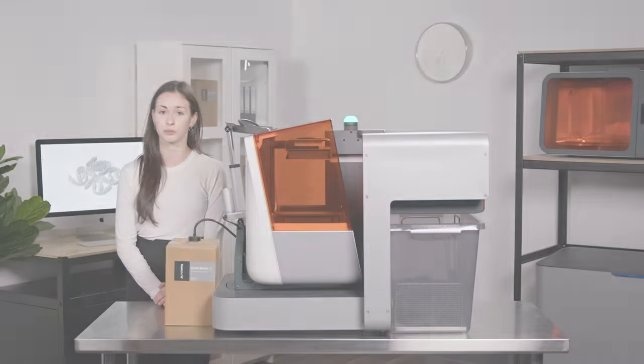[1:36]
But you can also use each tool independently too. Plus, each tool is compatible with any Form 3B series printer out in the field or purchased today. So good news for existing Form 3B and Form 3B Plus users. You can automate your printers right now.
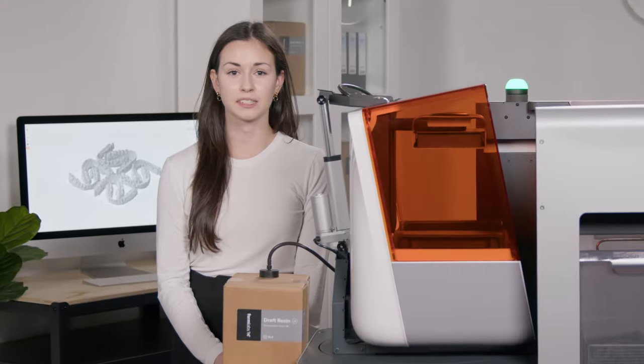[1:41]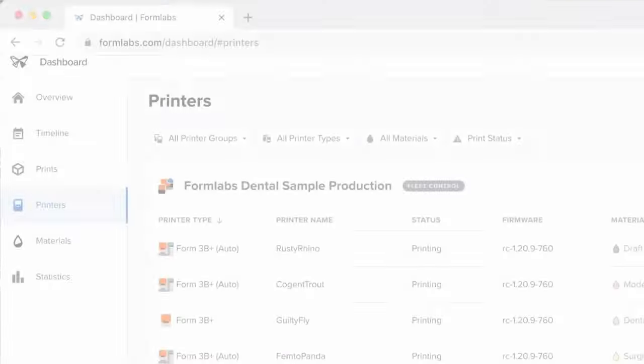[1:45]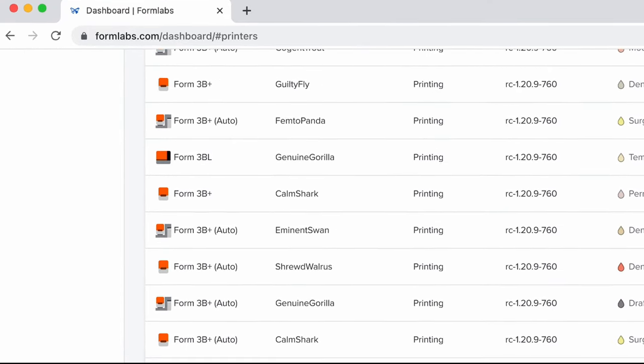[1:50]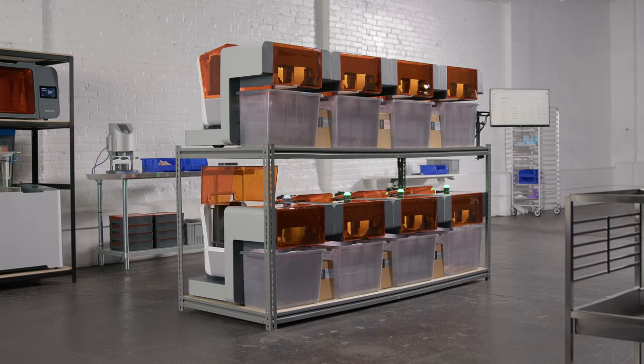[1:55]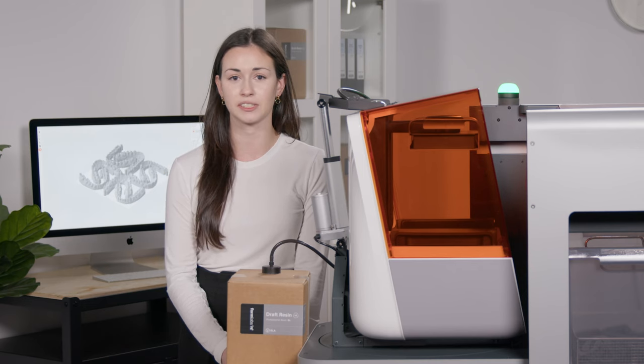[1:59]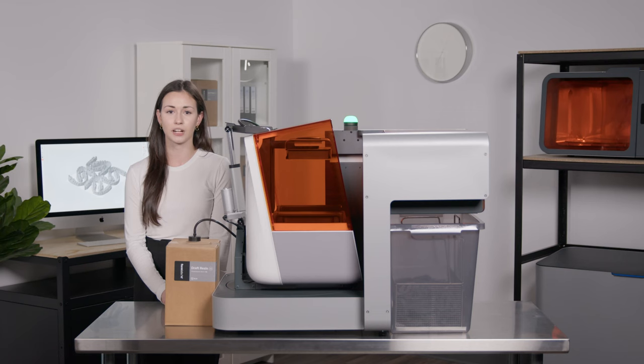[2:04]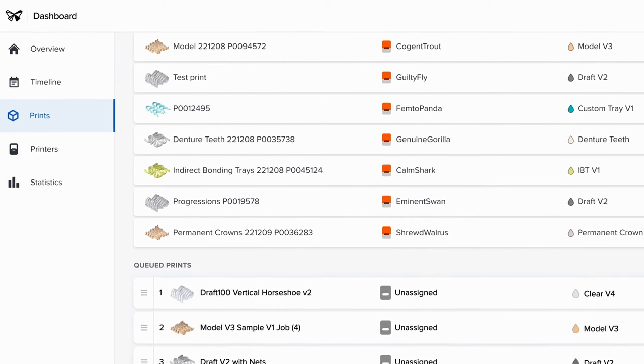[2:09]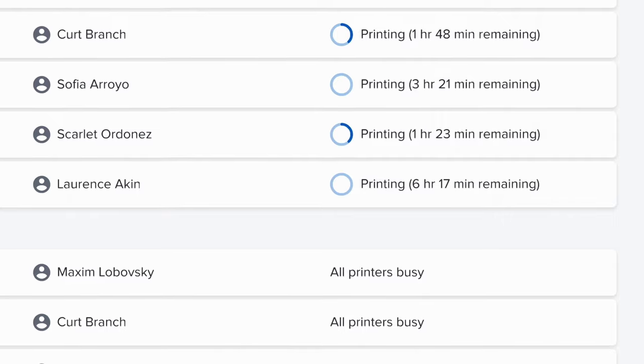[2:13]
The Form 3B Plus I'm using today is part of a shared printer fleet here at the Formlabs Dental headquarters, which includes a dozen Form 3B Pluses, Form Autos, and Form 3BLs. We use this printer group to produce dental model samples to send out to hundreds of potential customers per week. Connected through Fleet Control, my team can use these printers to produce samples from anywhere at any time, as soon as they're requested. So instead of having to track down a specific printer with the correct materials, I can just send my print into the queue and Fleet Control finds the best available printer in that fleet to complete the job as soon as possible.
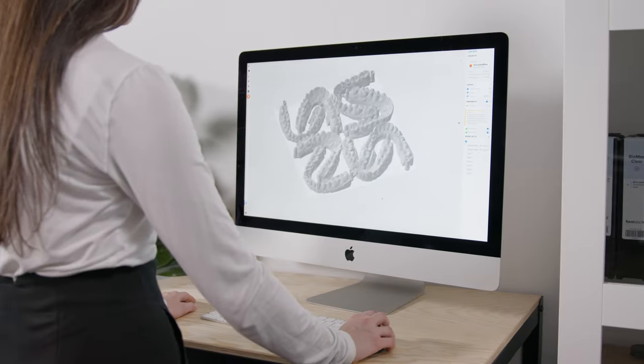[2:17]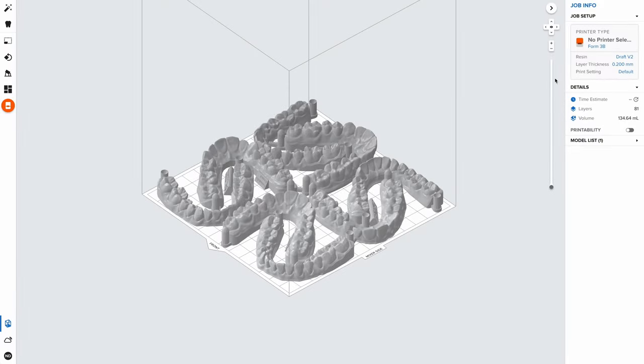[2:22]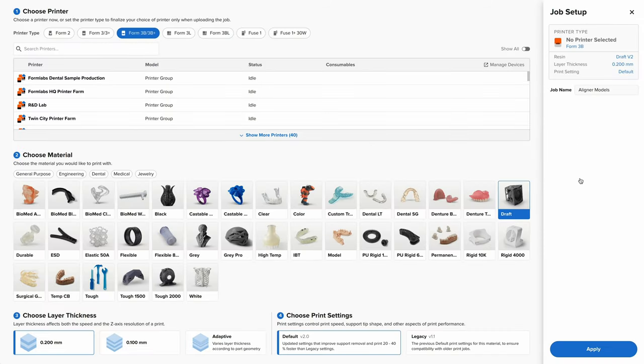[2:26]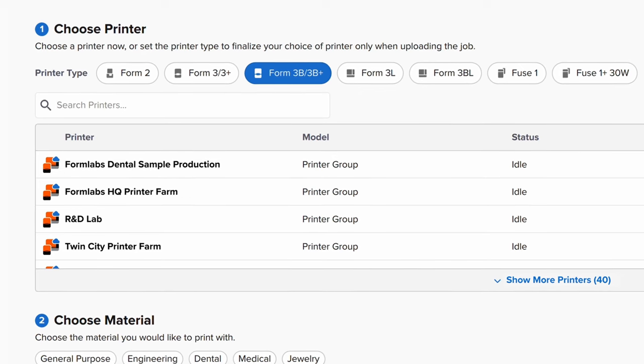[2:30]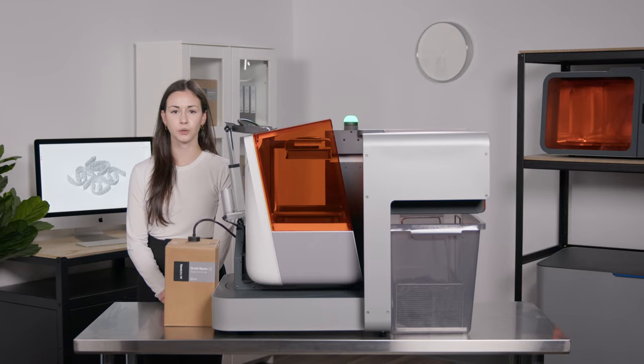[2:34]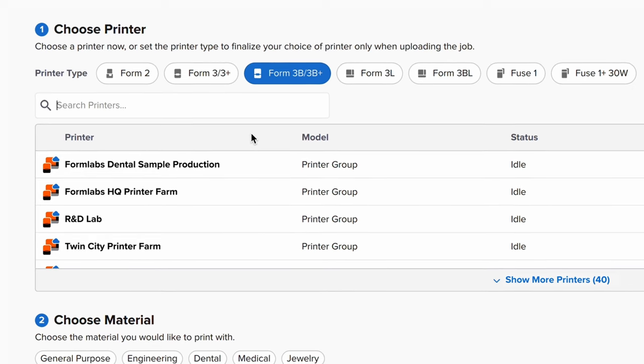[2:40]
Now, let's walk through the workflow together by starting with Preform, our easy-to-use software that preps your design for 3D printing. Like any Formlabs workflow, we'll start with the job setup menu, where you'll find everything you need to set up your print. You can organize your printer fleets into printer groups based on any preference such as location. With Fleet Control enabled, you can send prints directly to printer groups as well as individual printers. For our purposes today, we'll select Formlabs Dental Sample Production.
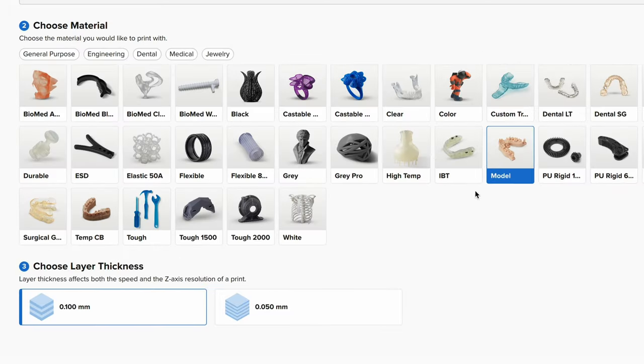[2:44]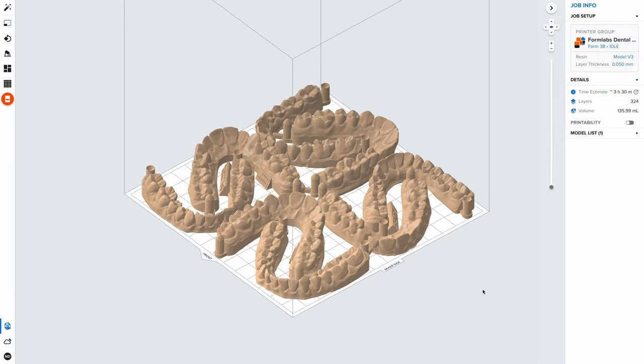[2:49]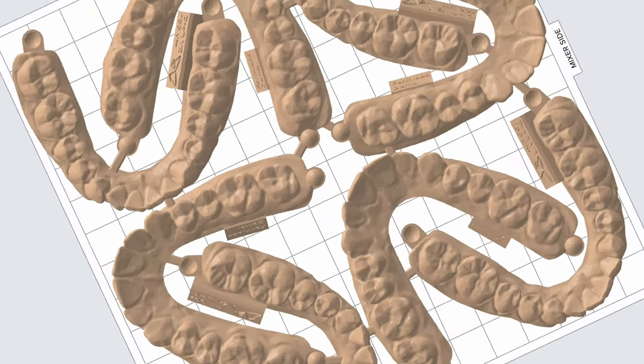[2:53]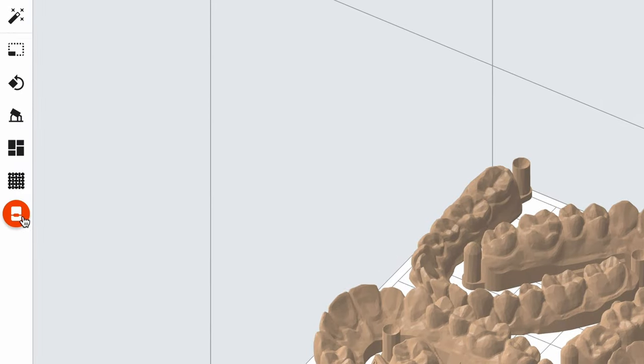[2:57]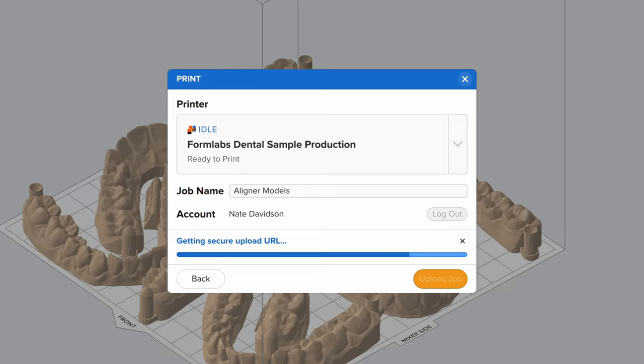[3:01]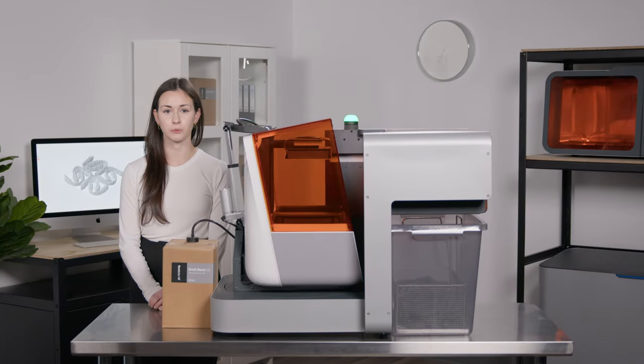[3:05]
Next, select your material and layer height and click Apply. We've connected these models together with small joining features so the individual print jobs can be easily identified after part release. Finally, clicking Start Print will automatically send your job to your selected printer group, which is where Fleet Control takes over. Now we can open Dashboard, our print monitoring software, to watch Fleet Control working firsthand.
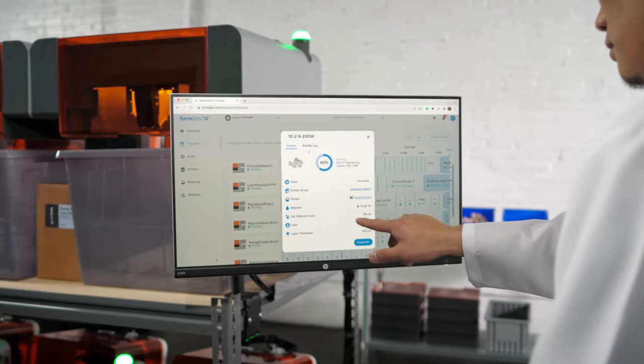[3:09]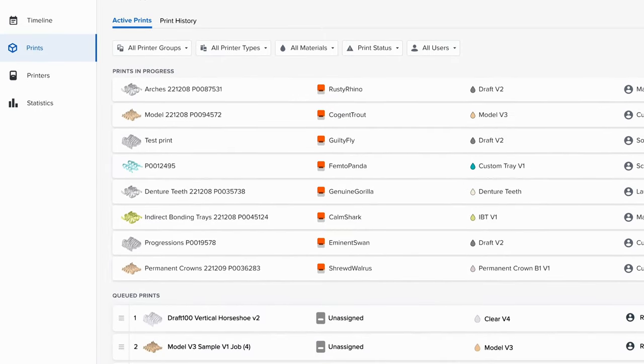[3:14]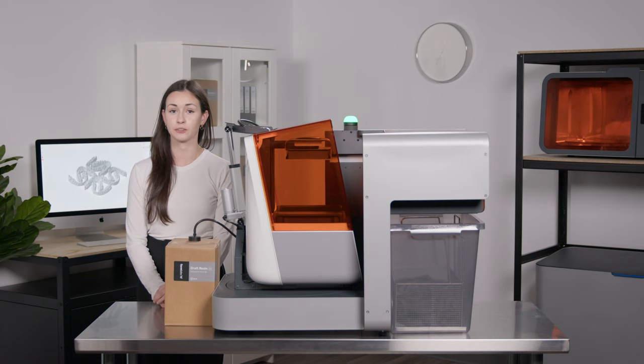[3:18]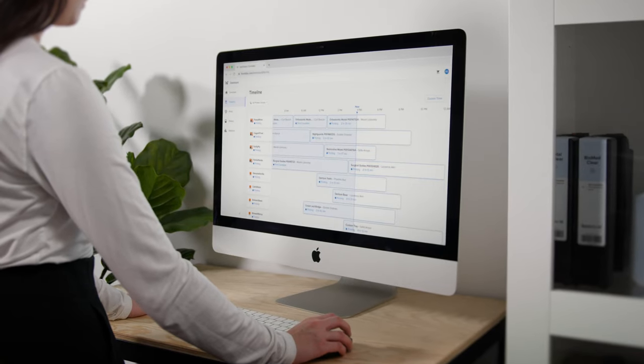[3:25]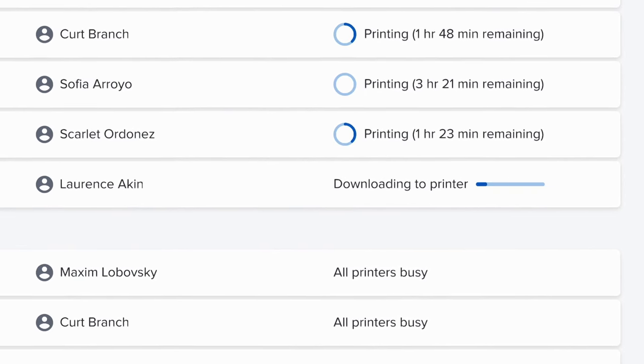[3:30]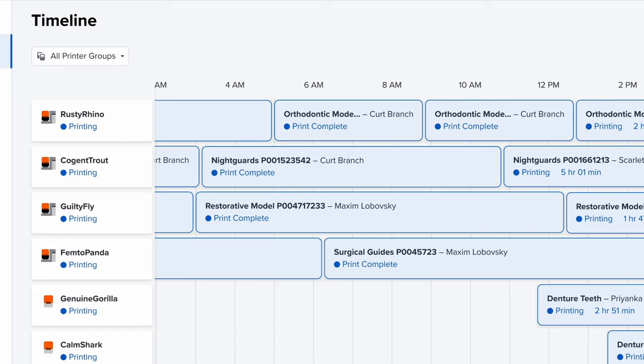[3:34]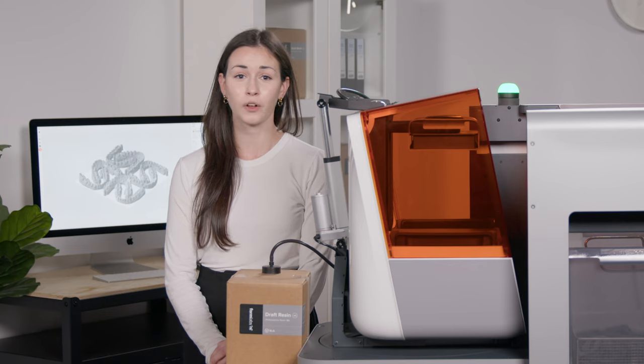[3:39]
Building off the success of our existing team management features, Fleet Control will make sure that your prints are completed as quickly and as efficiently as possible. Centralized queue management allows you and anyone on your team to send jobs to shared printer fleets from anywhere at any time, from your office or even from your couch at home. Once you send a print to the queue, automatic printer assignment picks it up and routes it to the first available printer, streamlining productivity across your team without anyone ever having to think about it. Then, all I need to do is pick up my parts once they're finished printing.
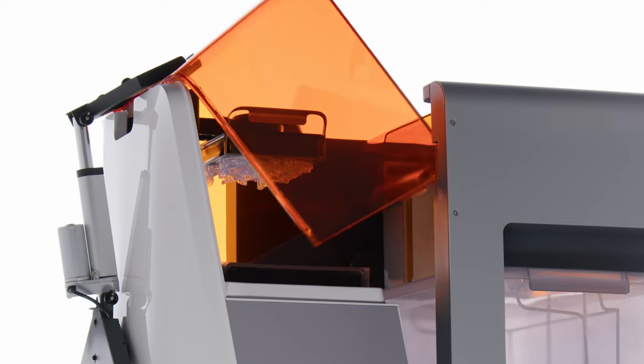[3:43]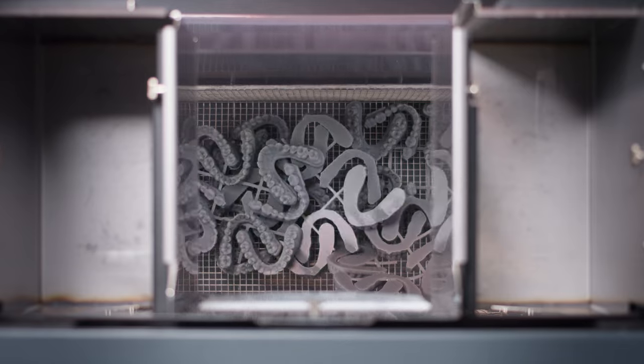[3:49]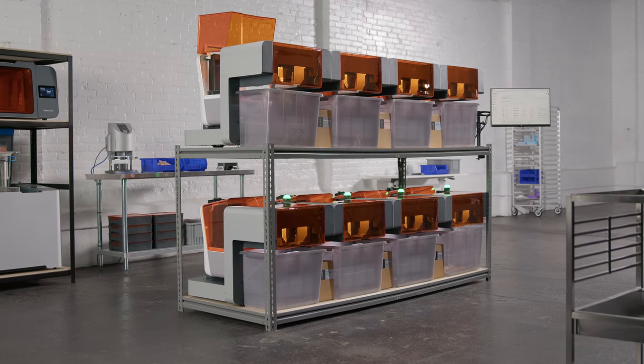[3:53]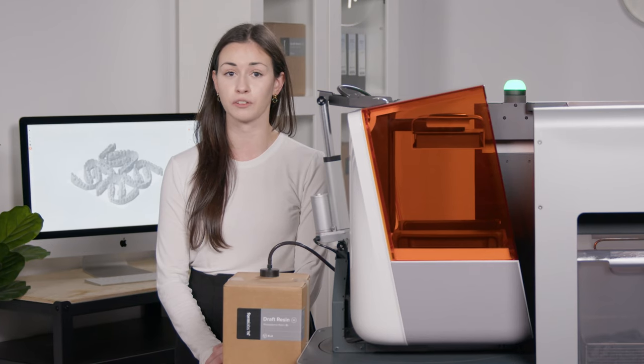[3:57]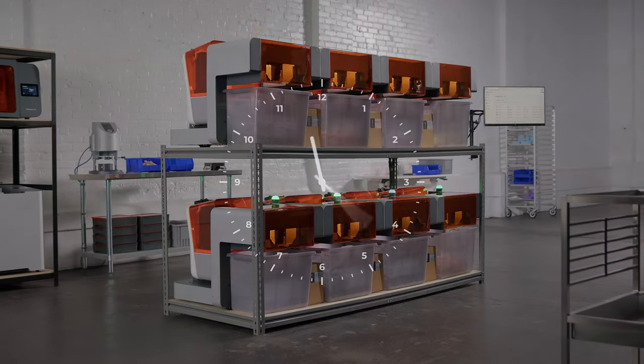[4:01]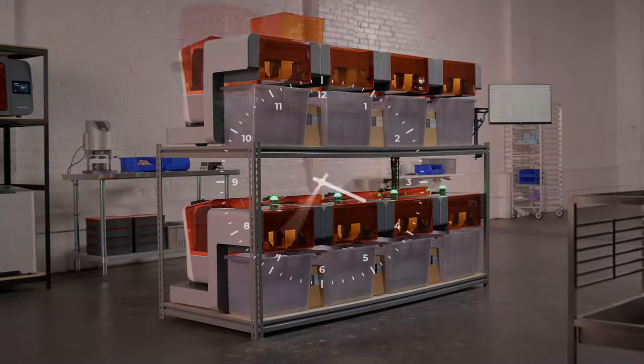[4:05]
Now for the easiest part, printing. By automatically removing parts from Build Platform 2 and immediately starting the next print, Form Auto enables non-stop throughput without me having to lift a finger. By condensing multi-operator shifts into one, Form Auto works overtime so you don't have to. Run printers unattended over the weekend to reduce turnaround times and deliver high-quality parts to patients more quickly than ever.
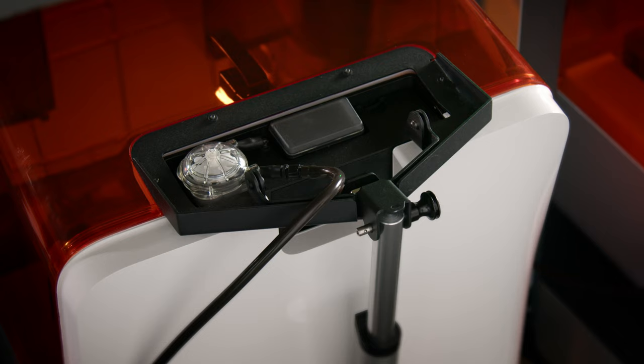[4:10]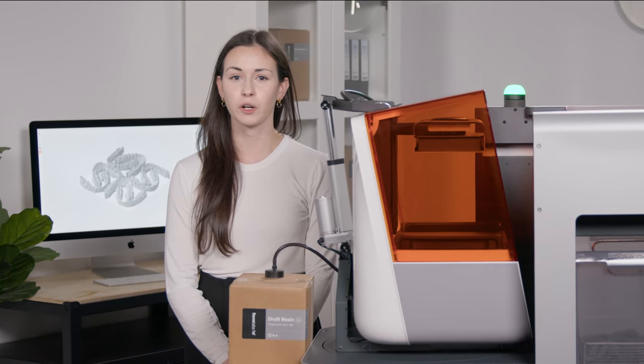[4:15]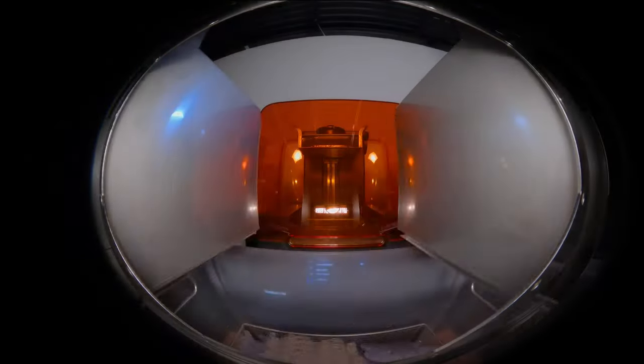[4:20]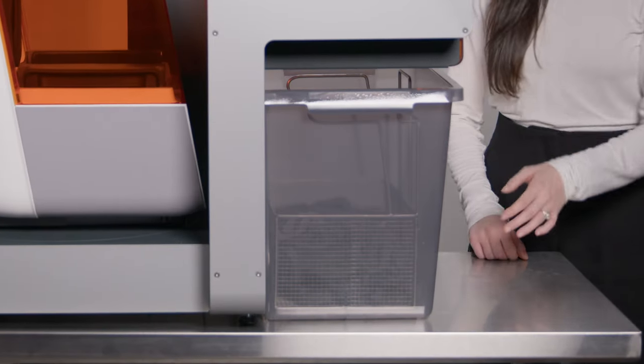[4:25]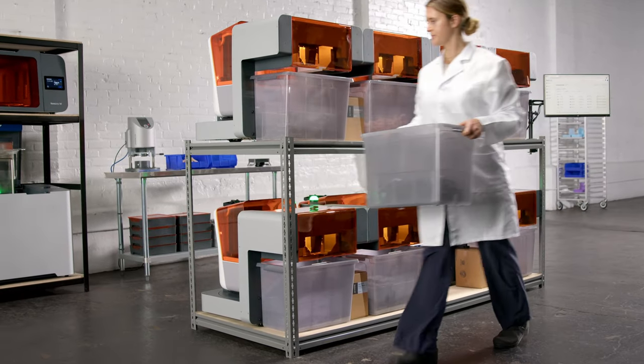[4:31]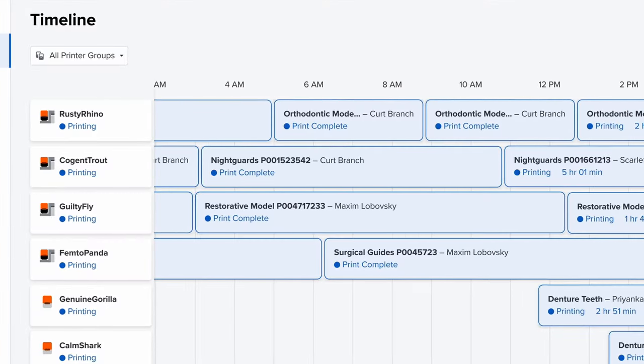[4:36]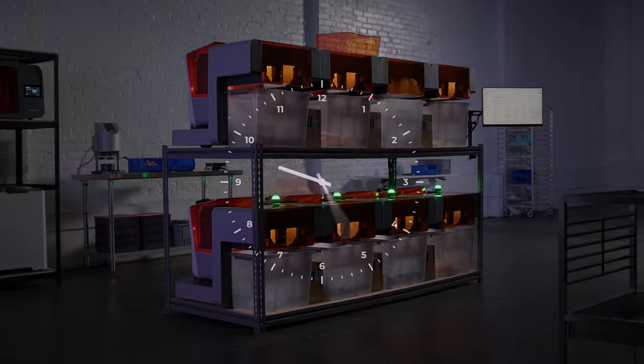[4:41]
Meanwhile, the High Volume Resin System is supporting continuous printing by delivering resin at 5 times the capacity of a standard cartridge. Working remotely, Form Auto's onboard camera saves a photo of each finished part for extra visibility into your prints. After printing, you'll find all of your parts inside this UV-safe container. The Form Wash L basket fits perfectly inside, enabling seamless transfer to our post-processing solutions, which are fully validated for biocompatible workflows. Batching dental parts for back-to-back printing and post-processing ensures there's no idle time, minimizing labor while maximizing throughput for lower cost per part.
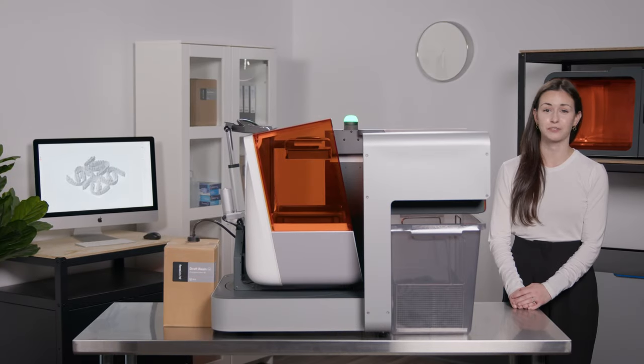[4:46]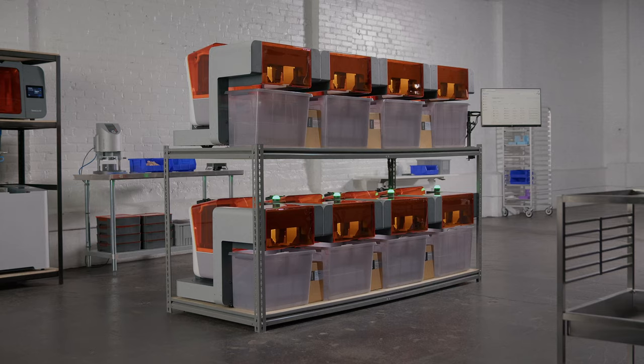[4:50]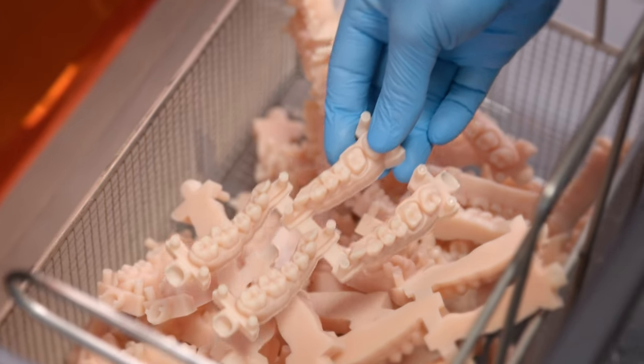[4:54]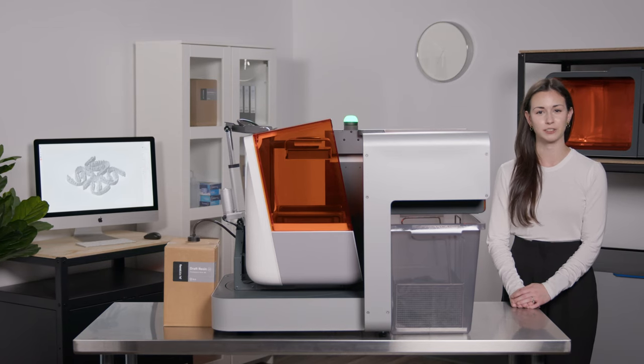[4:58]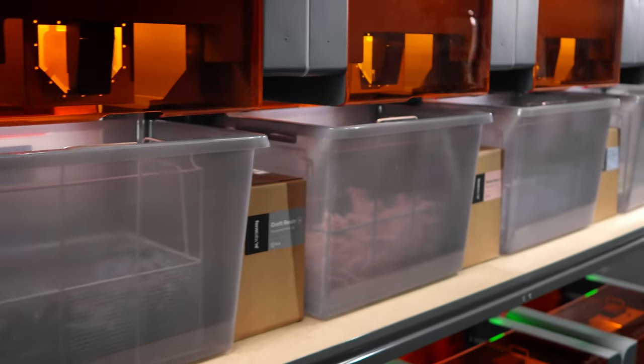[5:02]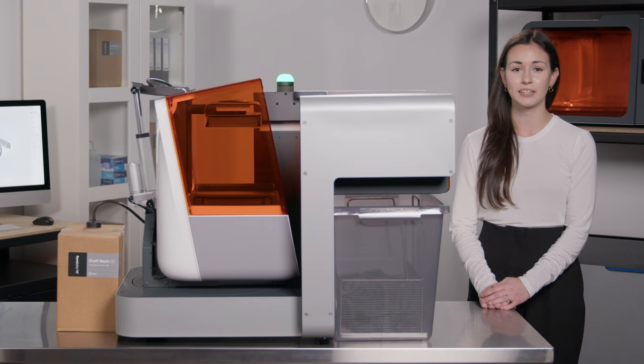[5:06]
No matter the size of your office or lab, the Formlabs Dental Automation Ecosystem empowers you with 24/7 production of personalized dental parts with industry-leading quality and unmatched seamless workflow. We're excited to push the boundaries of what you can do with our 3D printers, by bringing you the tools you need to scale production anytime, anywhere. With so many ways to tailor these tools to your needs, there's an automated dental workflow that's perfect for your production. Explore dental.formlabs.com to learn more.